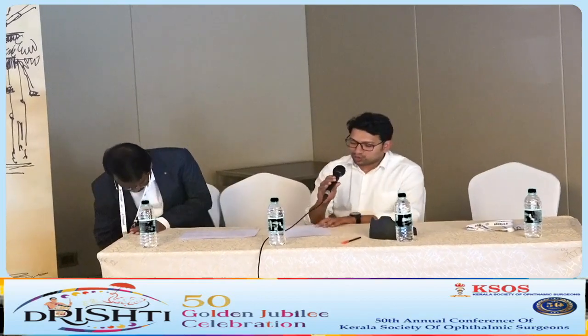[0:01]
So I would like to call Dr. Lakshmi, who's a co-instructor. She's a dynamic squint surgeon. She will explain about improving our strabismus skills with a model.
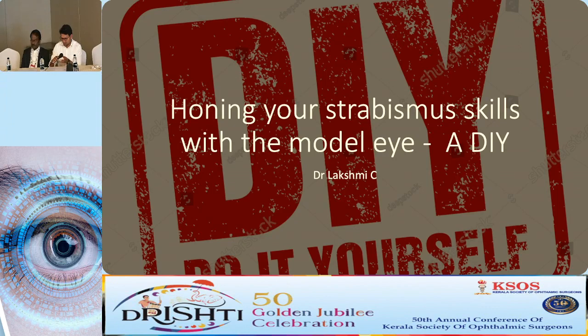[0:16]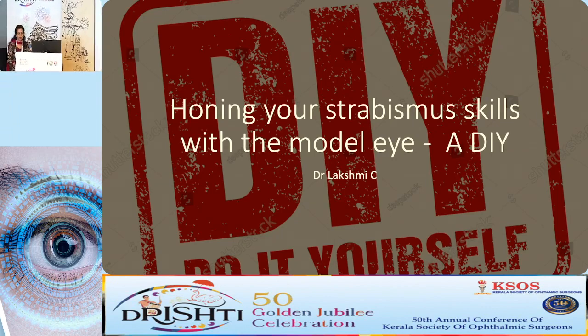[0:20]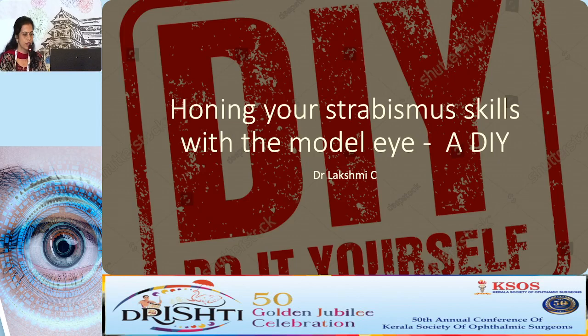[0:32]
So, good afternoon. The last session, all will be planning to leave, but still, we come forth with an interesting idea of how to hone your strabismus skills with a model eye, a completely DIY, do it yourself model, at a very low cost.
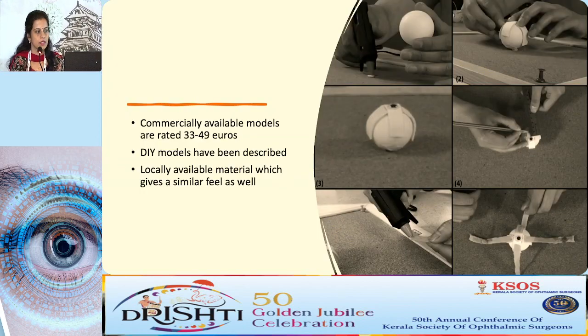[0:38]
So, commercially available models are very costly. The commercially available models, especially for the use of strabismus surgery techniques, have an approximate cost of 50 euros, and do it yourself models have been described and published. And we have used locally available material, no material to be bought exclusively from any other vendors.
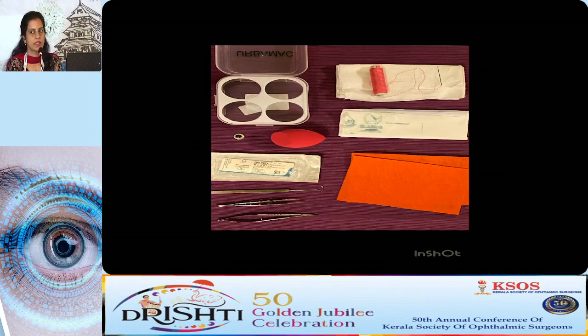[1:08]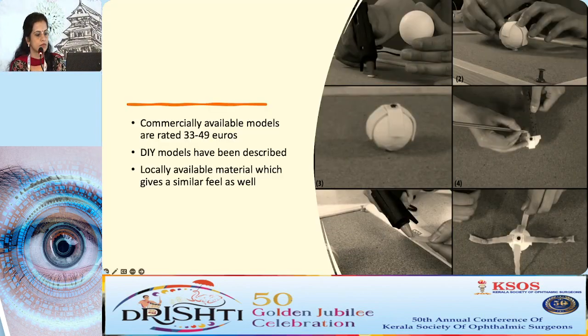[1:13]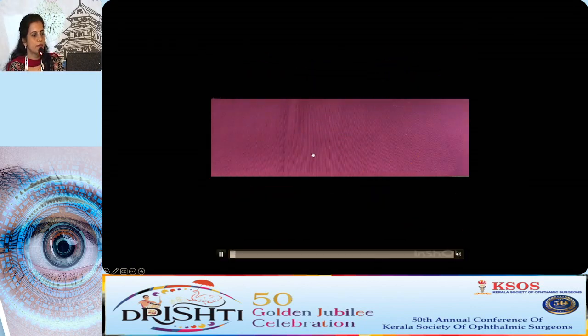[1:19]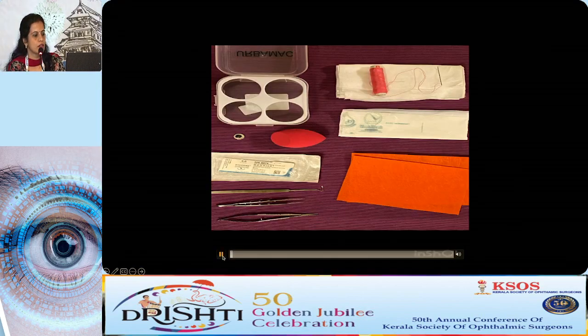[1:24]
So these are the equipments that we need for a cost-effective wet lab. This is a small makeup sponge that we have, felt paper, then plastic covers which we can avail from any of our purchases, a cotton cloth, suturing equipments, or a simple needle and thread just to attach it, and the surgery instruments that we usually carry.
A holder, I have just used an old plastic box with a hole to hold the eye, but you can use any sort of instrument, you can use a cardboard box like Raju sir had told. We had used that in our wet lab when we had conducted the wet lab. You can use this also.
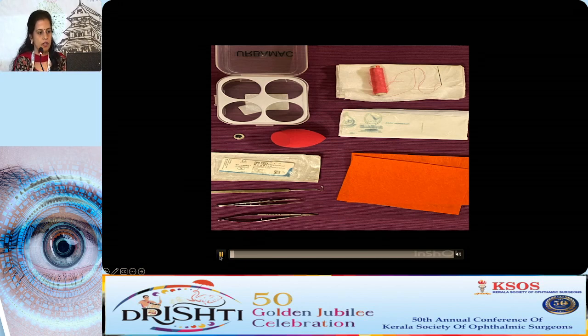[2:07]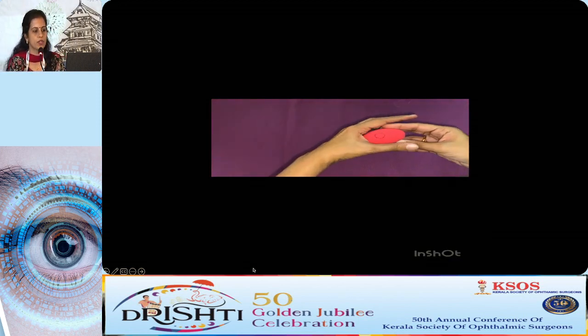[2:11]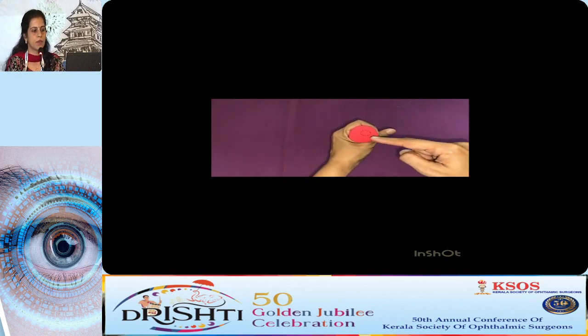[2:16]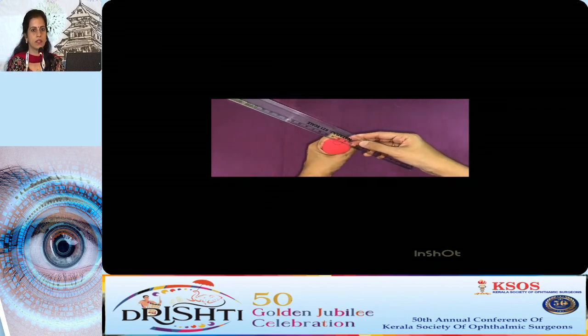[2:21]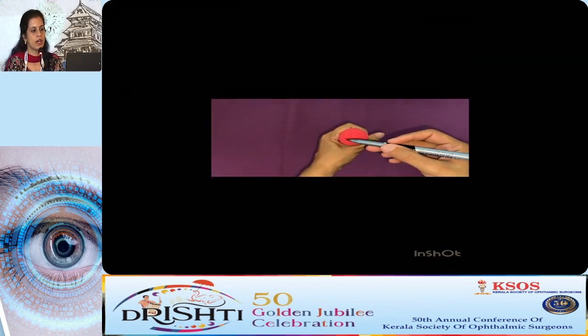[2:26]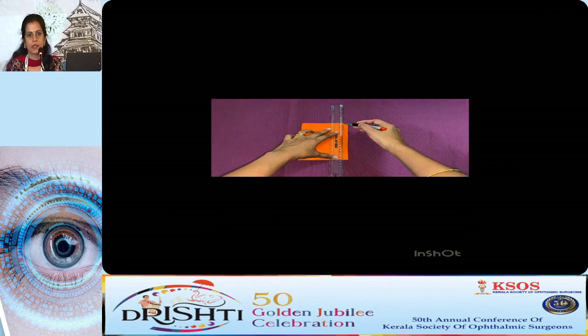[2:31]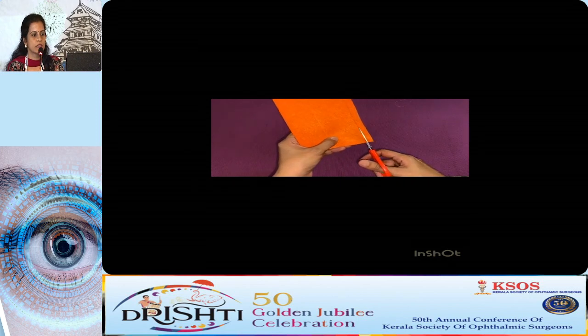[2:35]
So this is how you make it. It's a makeup sponge costing less than 150 rupees or so. A central area is marked there, which represents the cornea. We can mark the muscle insertions with a scale. And after marking that, cut out a few felt paper strips for the muscle, cut to the required size. This also costs very less, less than 50 rupees or so.
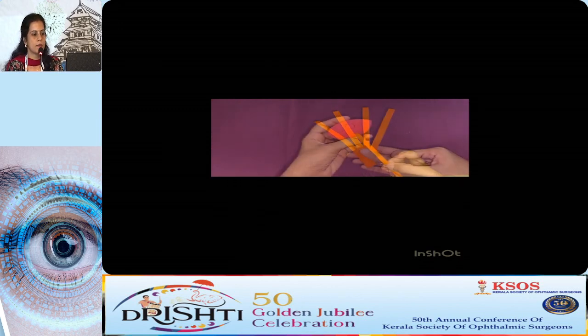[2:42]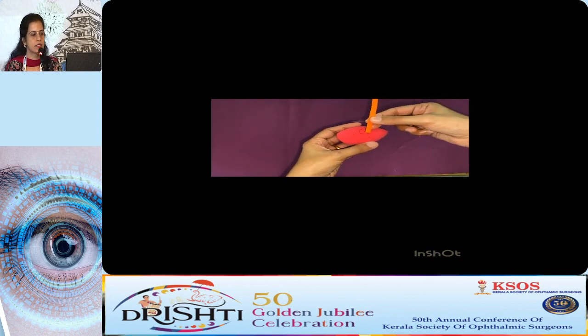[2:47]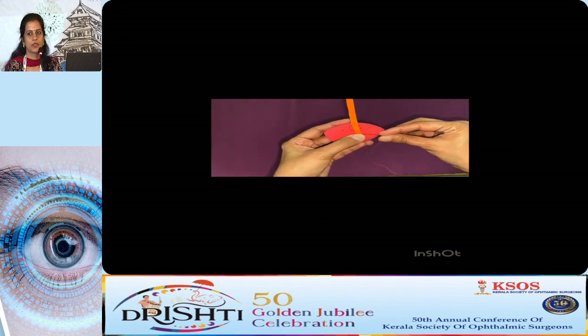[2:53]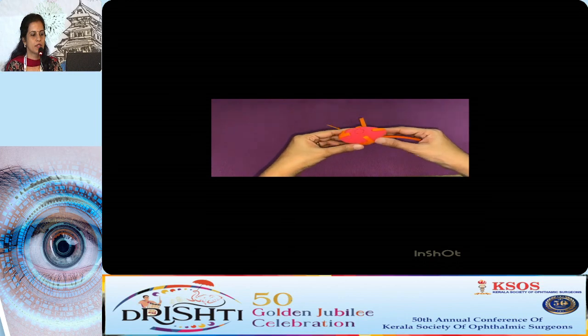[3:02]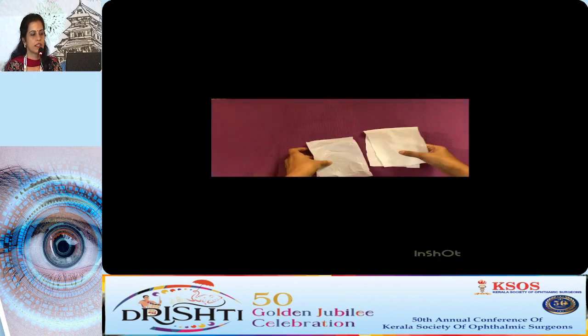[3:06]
And this can be attached to the desired muscle insertion site with a simple needle and thread. I like sewing, so maybe I did the sewing technique. You can also use a glue gun for the same. That will also give you the same result. So here are all the recti and the obliques, and we can cut that extra thing.
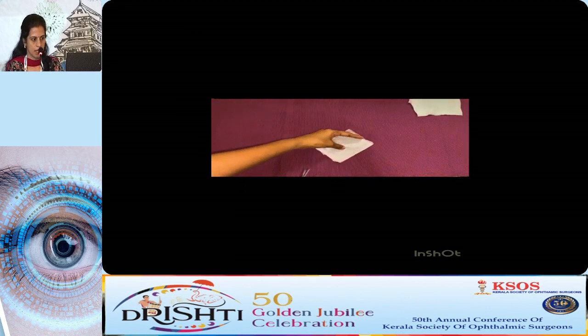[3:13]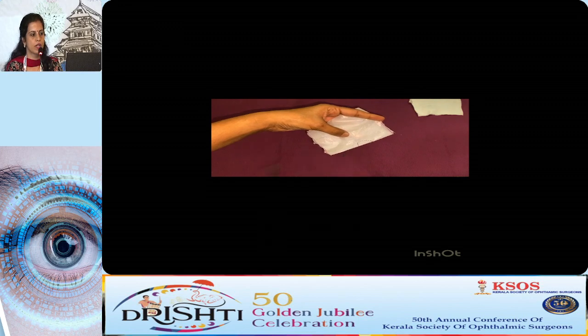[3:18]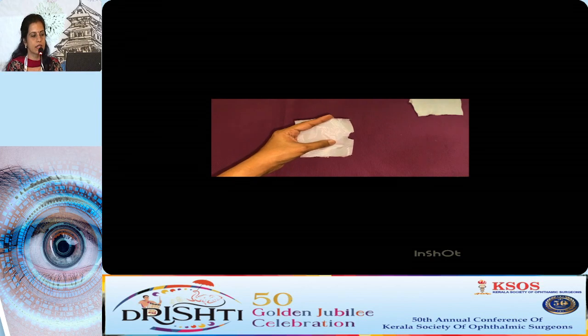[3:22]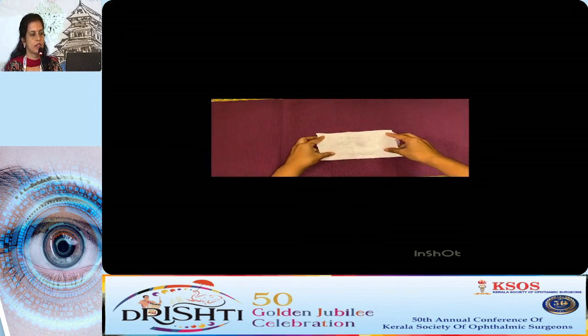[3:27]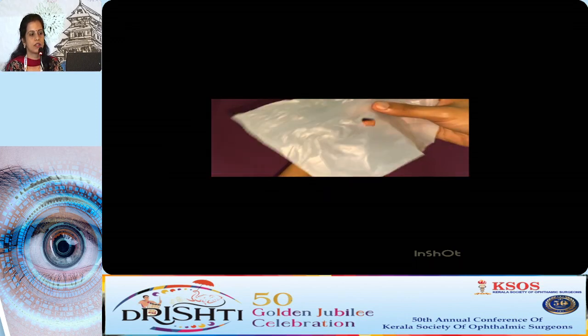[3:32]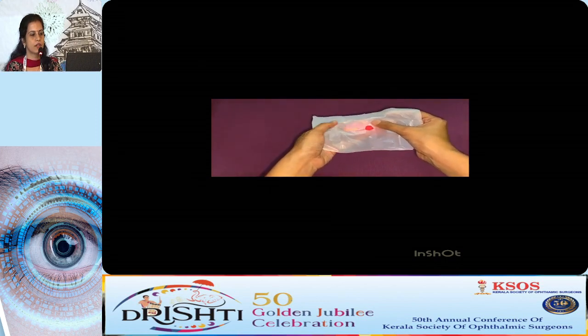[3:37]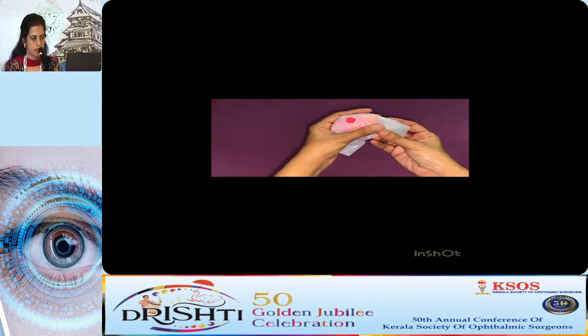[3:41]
So these are plastic sheet and cotton cloth. We'll cut a rectangular model of that. And in the central area, we have just cut a small area to represent the cornea. I've used 2 sheets just for getting the feel of the tenons and the conjunctiva. Keep one above the other and simply wrap it around our eyeball sponge. This is the first layer of plastic which represents the tenons. The corneal part is just left behind.
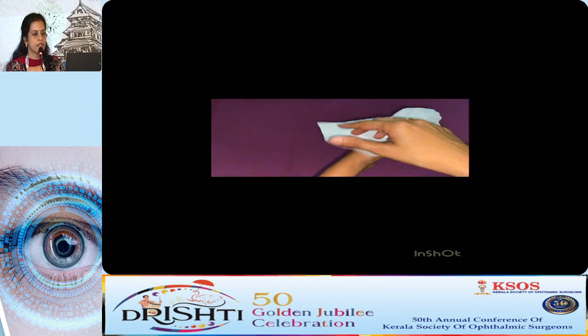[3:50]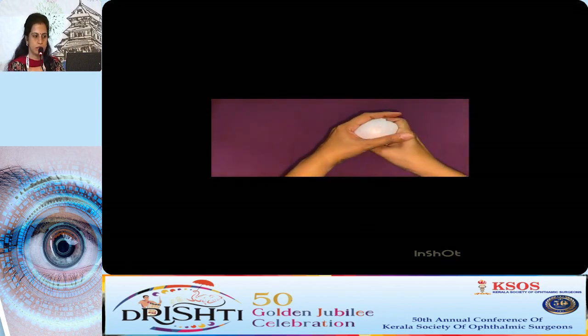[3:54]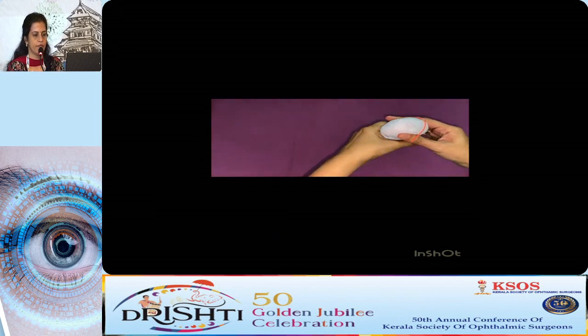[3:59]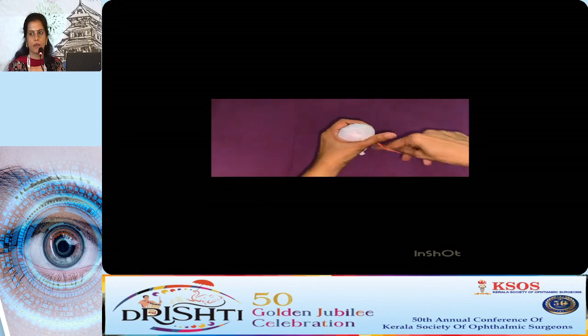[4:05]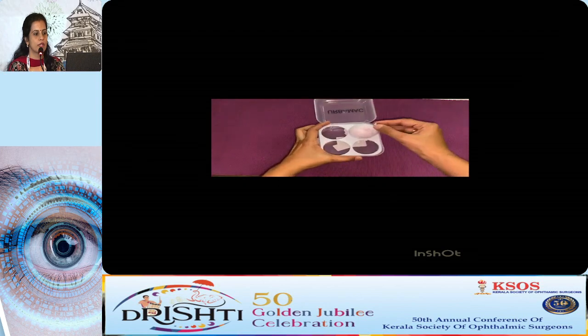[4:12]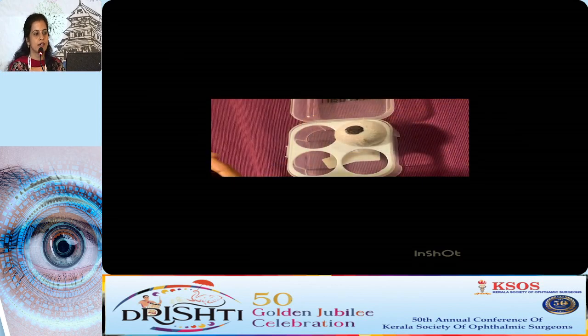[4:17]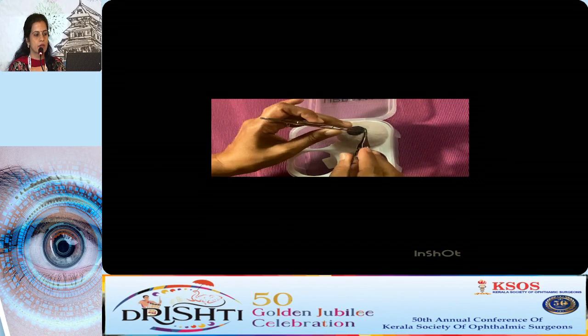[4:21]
And over that, we just wrap it around with a cotton cloth and secure it with a rubber band. So this is how we make our model eye. Now, to give it a little bit more cosmetic appeal, you can attach a googly eye or draw an eye there. I've used the simple holder. A cardboard box with a cut can also be used.
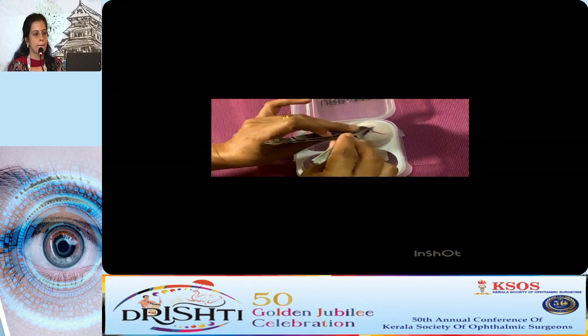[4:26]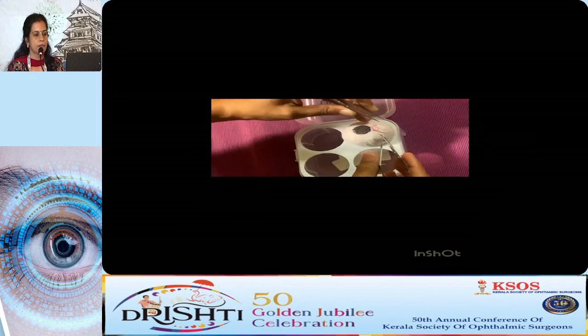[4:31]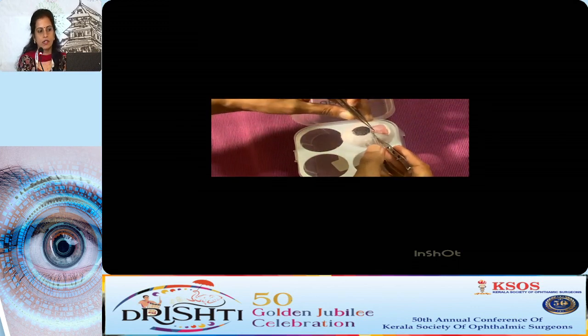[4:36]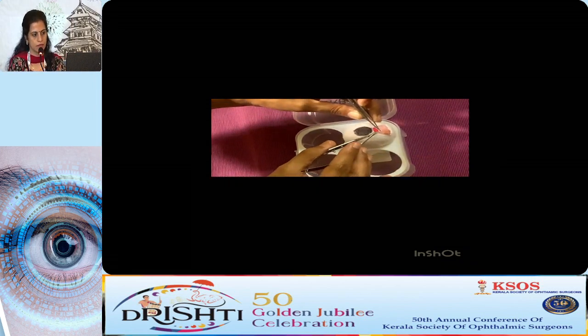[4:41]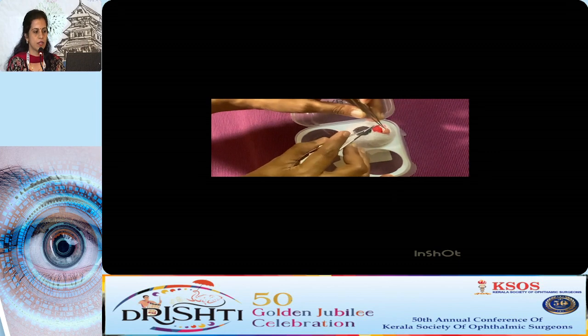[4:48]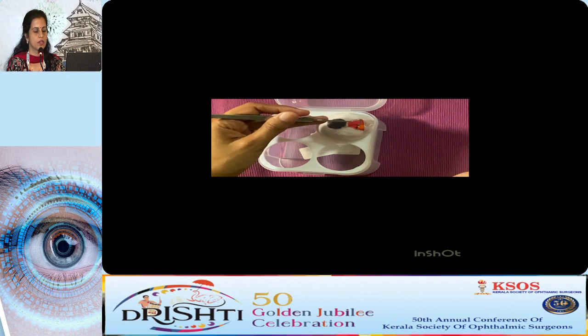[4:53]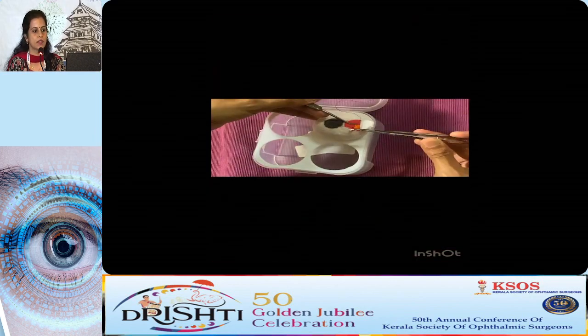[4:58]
So here we have made a limbal incision and a conjunctival flap over the muscle area. And then the feel of the tenons also can be got with scissors. It gives a sufficiently similar feel of tenons, even though not exactly. And we can hook the muscle, showing how to insert the hook and how to pass the sutures.
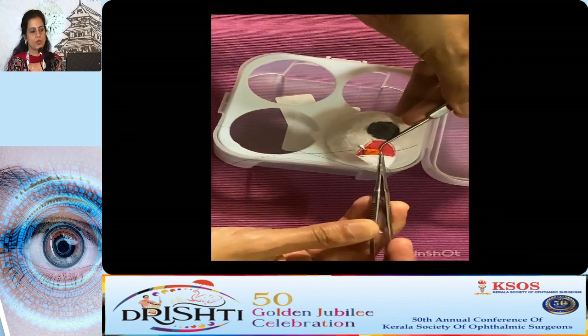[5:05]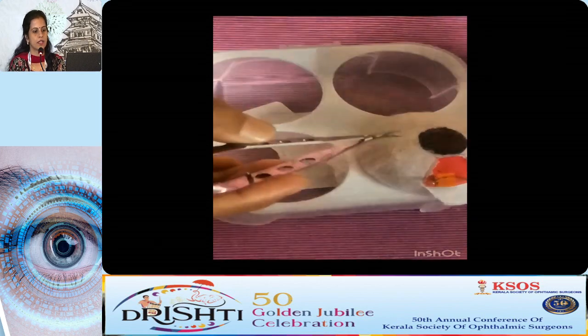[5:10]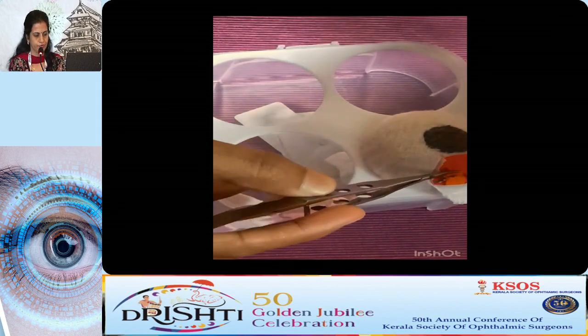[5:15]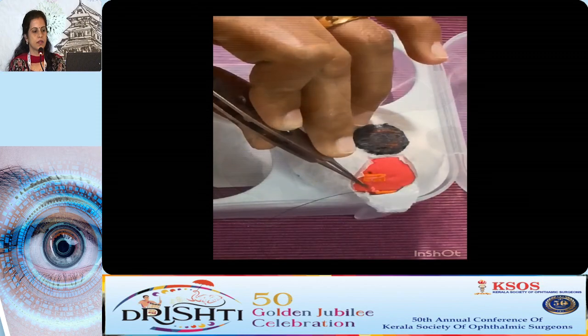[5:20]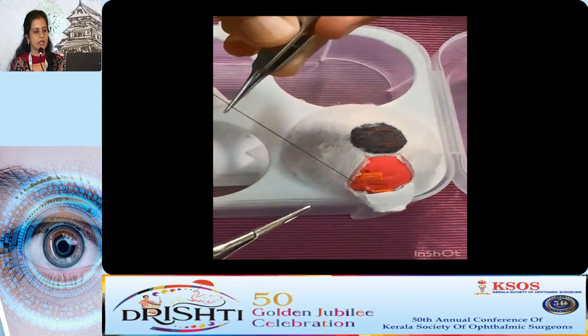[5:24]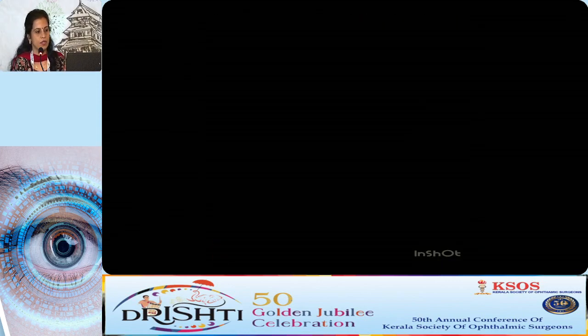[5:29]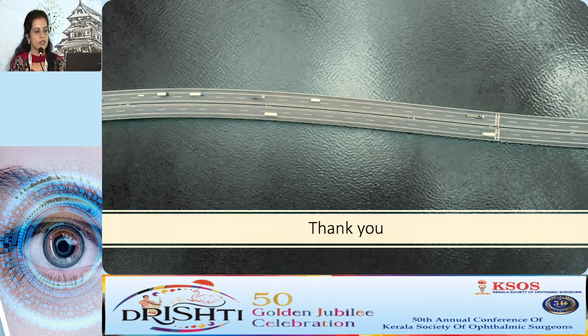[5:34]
So this is the first pass, which is a partial thickness pass with a 4-0 black silk suture, and the second suture is also passed. We can cut the muscle at the insertion. And muscle recession or resection can be practiced. We can pass the sutures to the desired site. So this is how we go about doing a model eye and squint surgery.